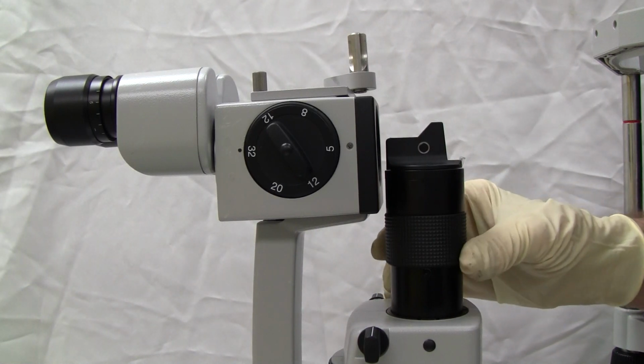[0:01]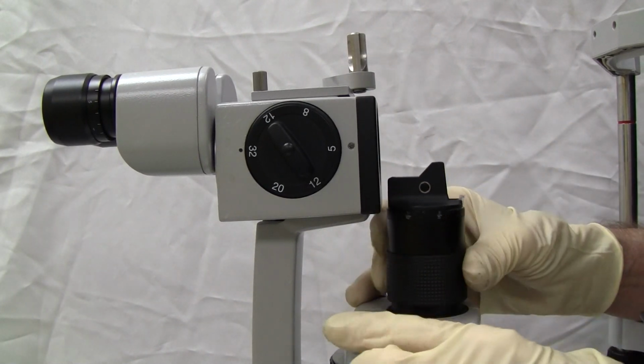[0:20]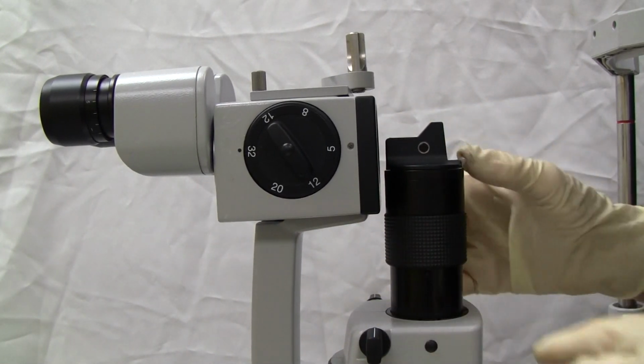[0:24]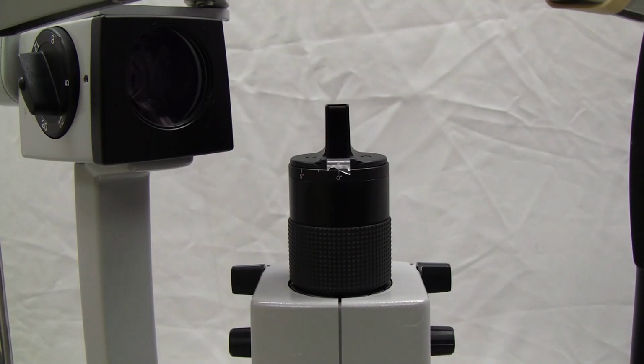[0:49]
On this Zeiss SL-120 or 130 or 160, you have a tiltable prism head that stays in position even though you're moving the prism head out of the way. And on the front of the prism assembly there is a diffuser that can be flipped into place, up or down, to diffuse the light. And sometimes these diffusers break and they need to be replaced.
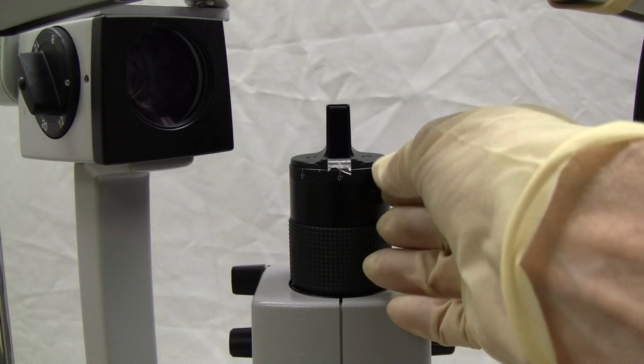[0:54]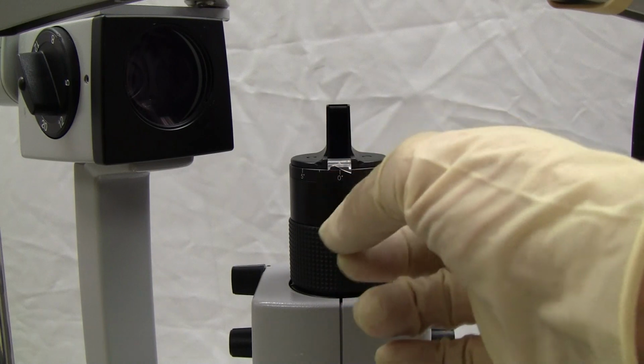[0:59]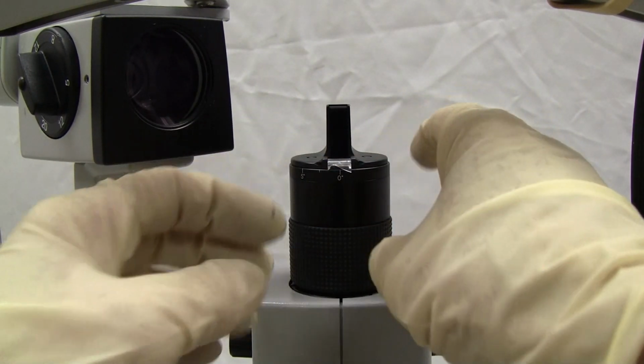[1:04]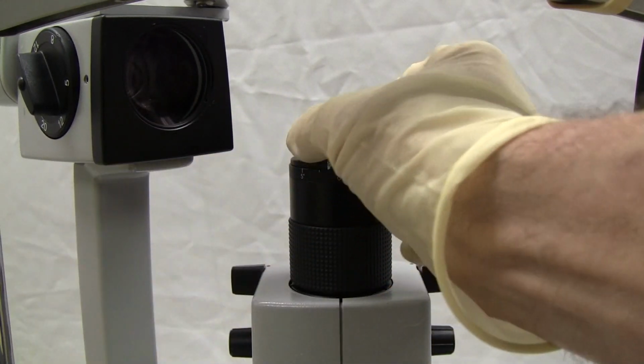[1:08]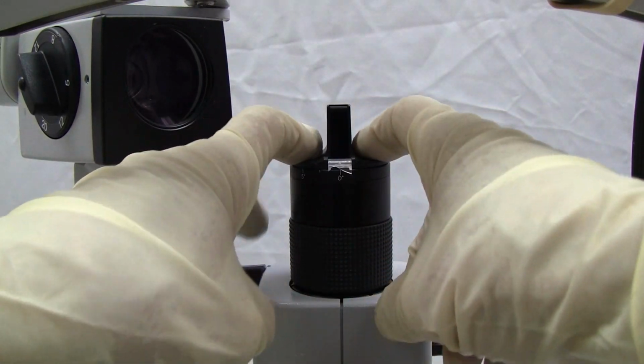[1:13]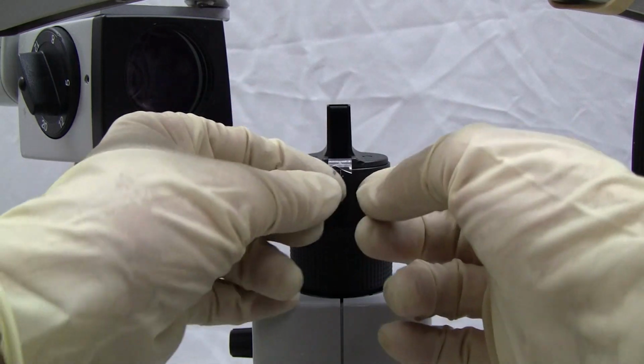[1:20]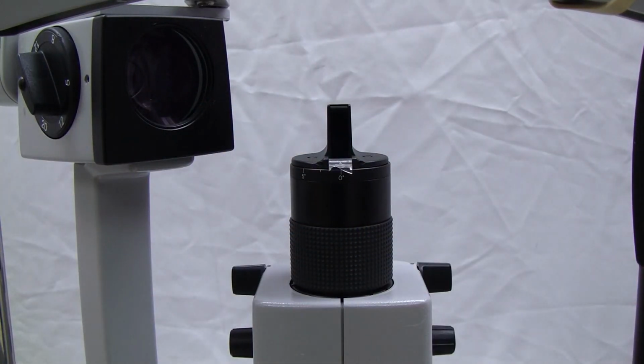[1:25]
Now, if possible, it's probably better to leave it in place while you're replacing the diffuser, because when you loosen these screws and remove the whole assembly, you're going to have to readjust it. So if you don't want to have to readjust your alignment and everything of the light, you can do it in place. Or if that's not a problem, go ahead and take it off.
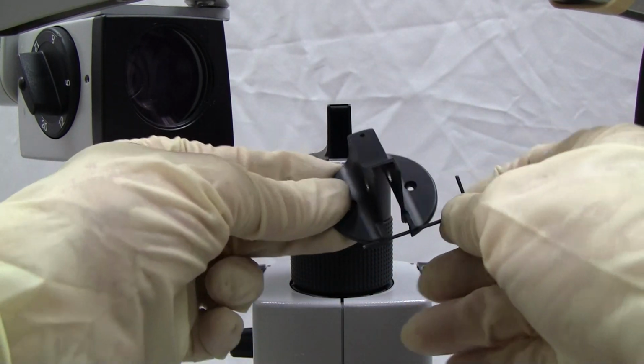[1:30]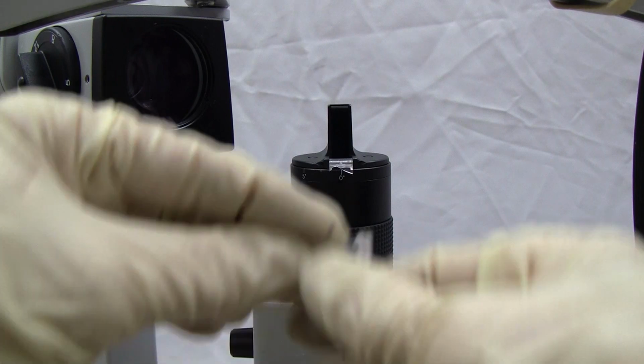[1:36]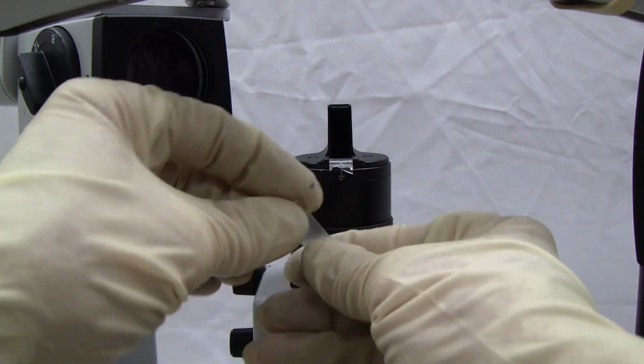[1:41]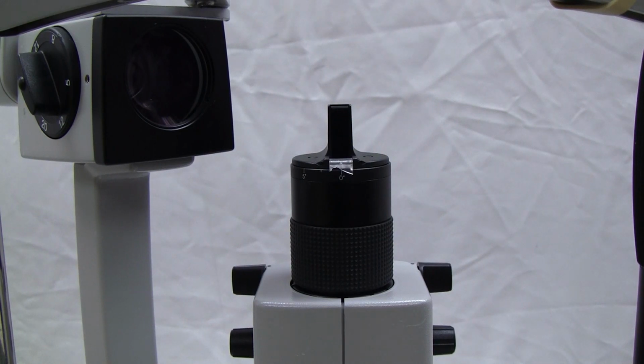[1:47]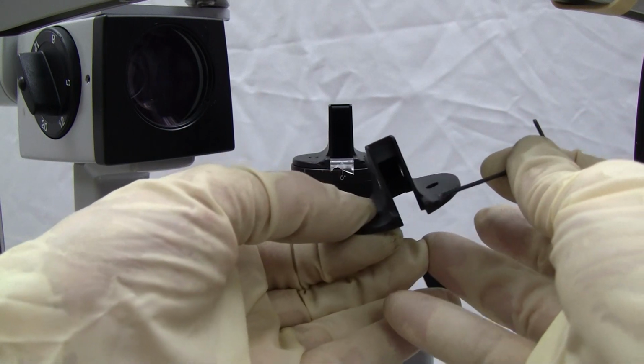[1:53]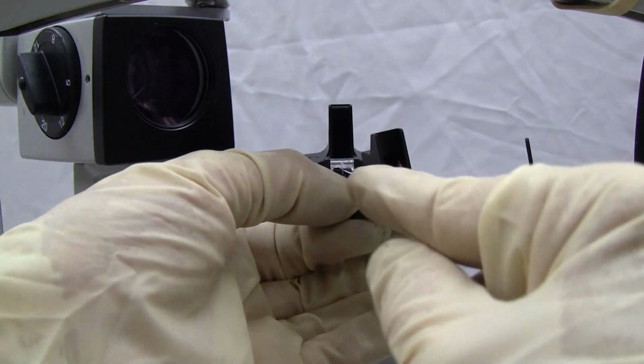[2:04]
But what we're going to do is push the pin through. It's held on by a pin that goes in the bottom, and it pivots on a pin. And all we're going to do is get something thin and push the pin out of the way so that we can replace it, and then we can push our pin back.
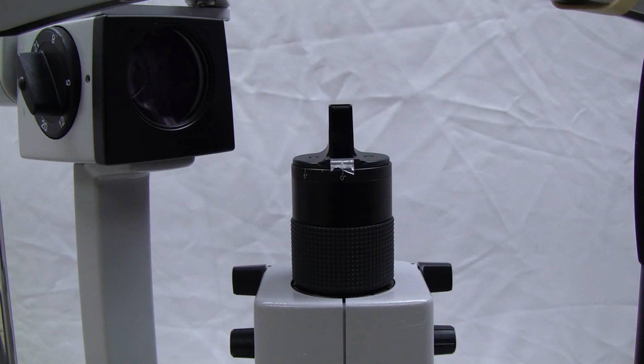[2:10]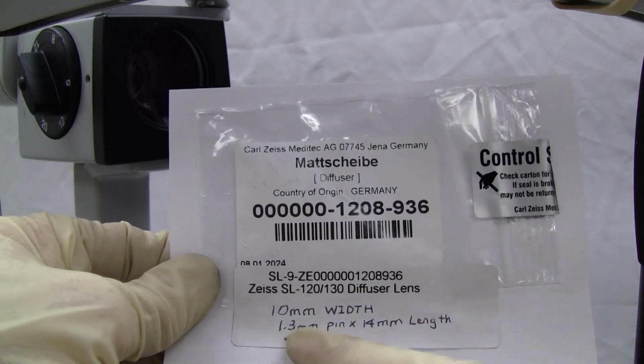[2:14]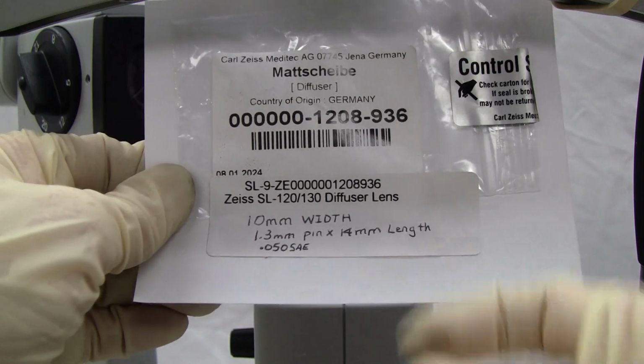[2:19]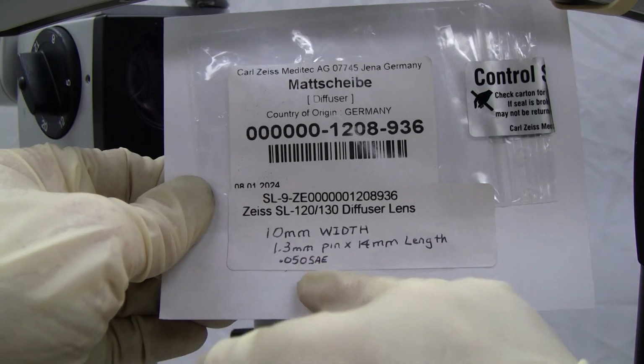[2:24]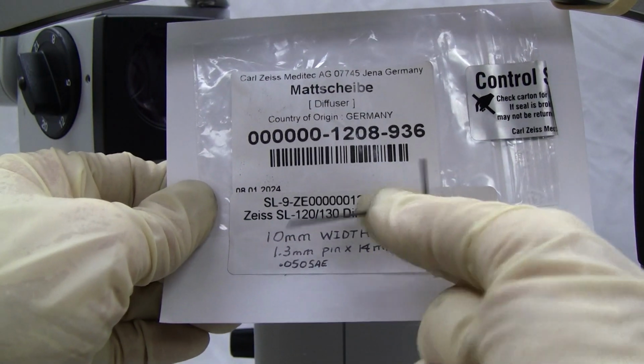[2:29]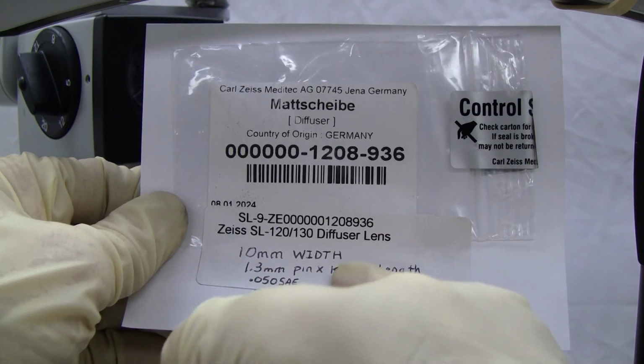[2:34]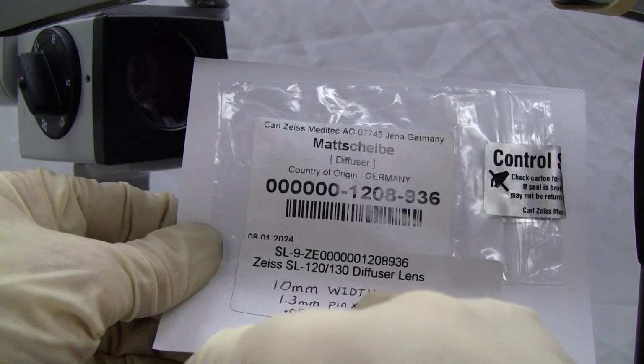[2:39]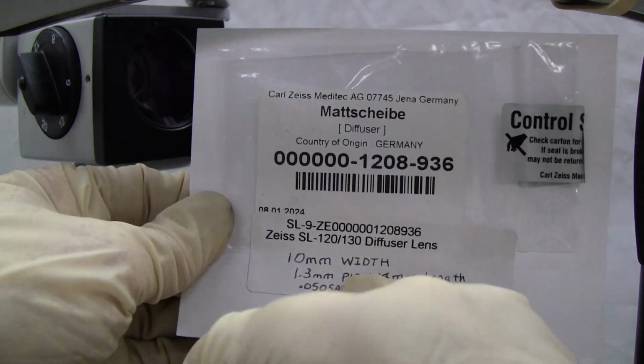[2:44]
And this small hole is about a 1.3 millimeter. So if you had a small Allen wrench, it's either 1.3 or 0.050, then you could slide it in there. And if you didn't have the pin, it's about 14 millimeters in length. And the width of the diffuser is 10 millimeters.
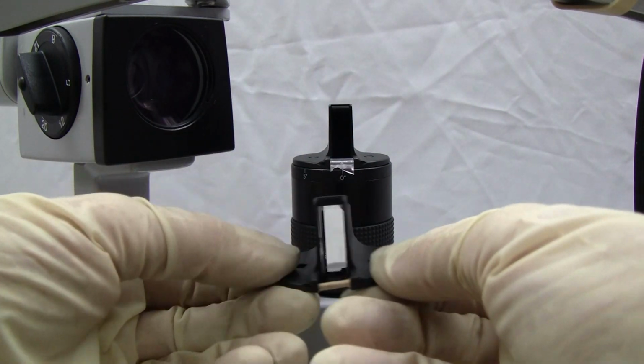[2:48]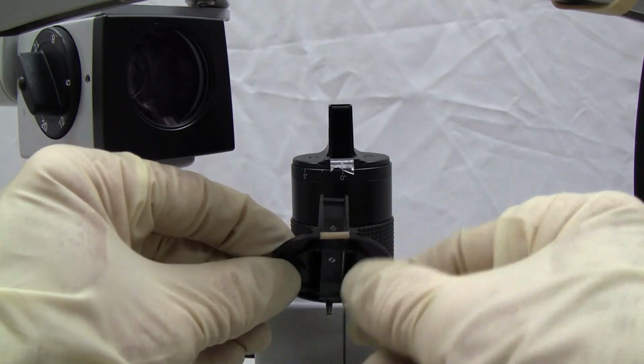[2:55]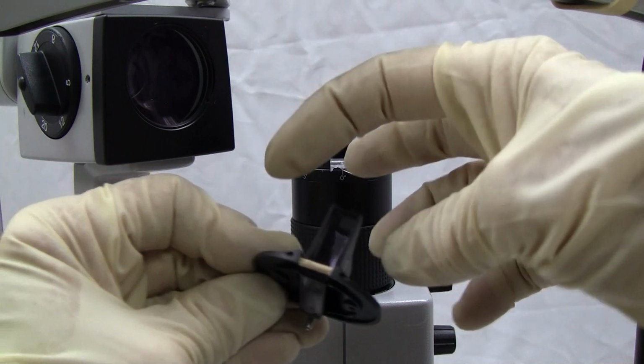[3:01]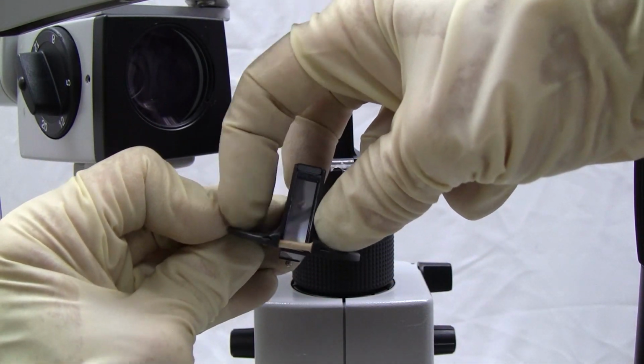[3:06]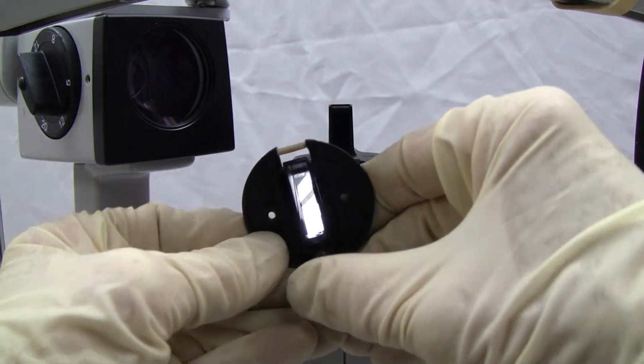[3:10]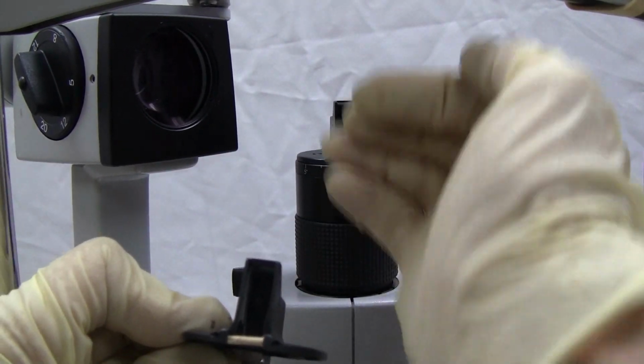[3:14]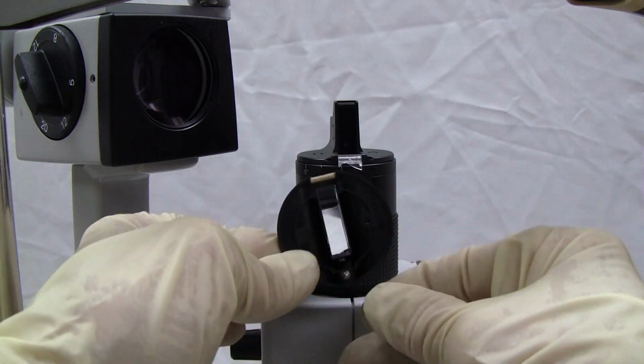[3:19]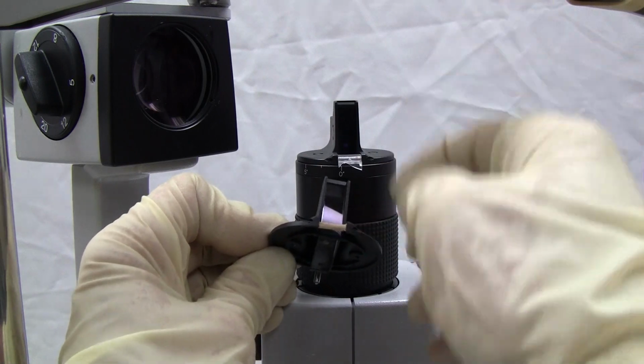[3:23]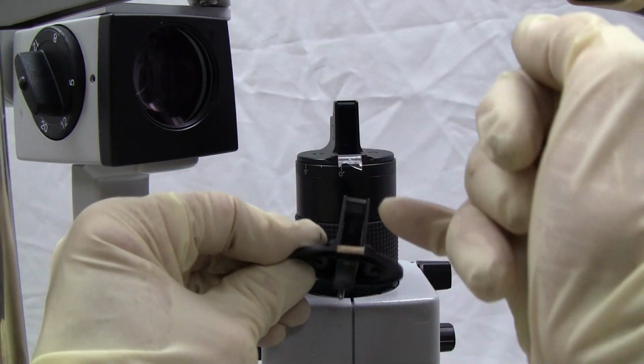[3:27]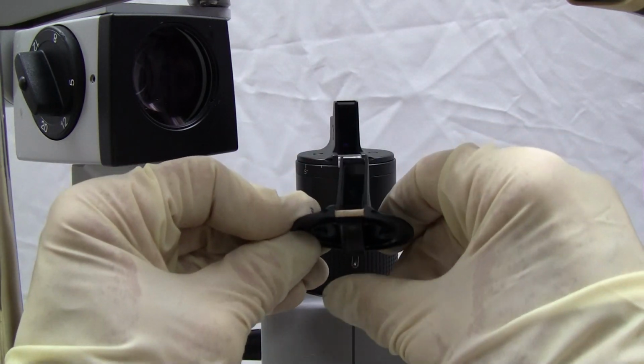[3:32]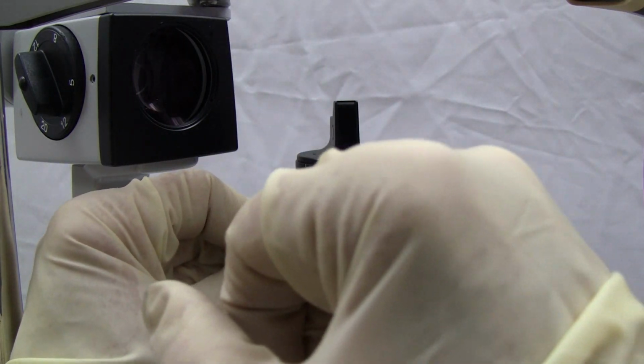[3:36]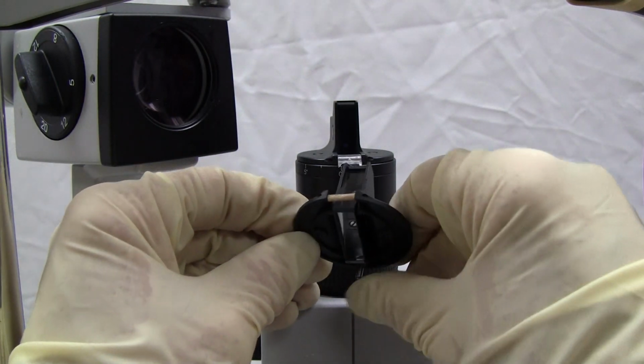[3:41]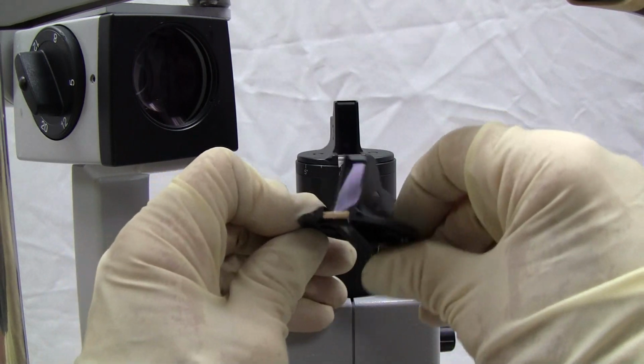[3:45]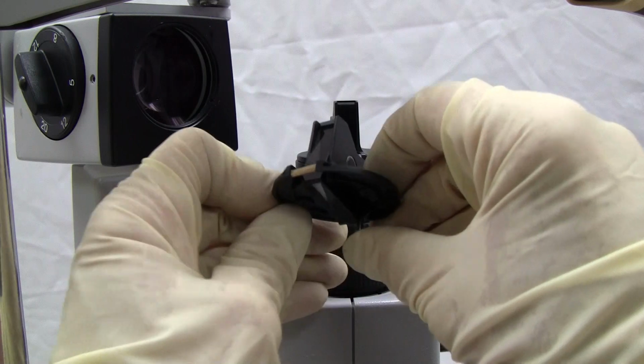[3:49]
And sometimes it's gone completely, the pin, and it's still important to maintain that spacing, because if not, it's going to put pressure on your prism that moves when you're turning it up and down. It's pivoting at the same angle, and so this space is important so that it's not pushing your cover against the prism and holding it from moving correctly. So that 10 millimeter space needs to be maintained so that your prism will continue to work correctly.
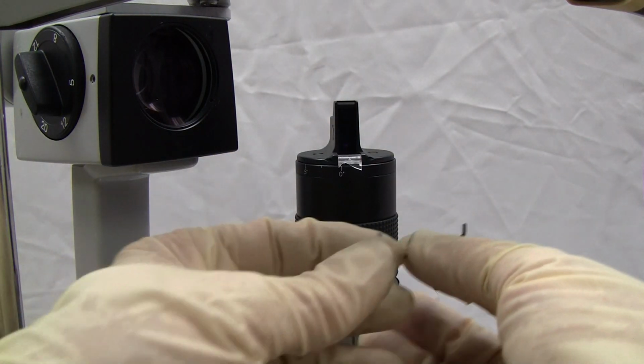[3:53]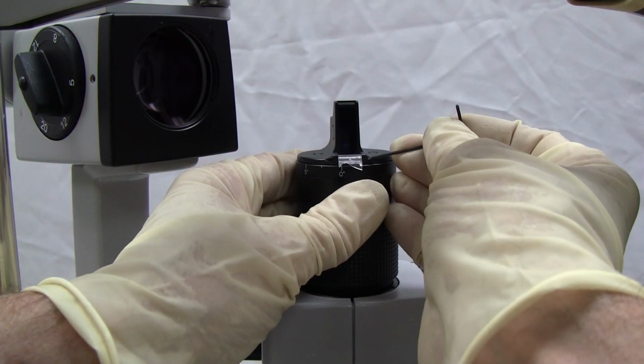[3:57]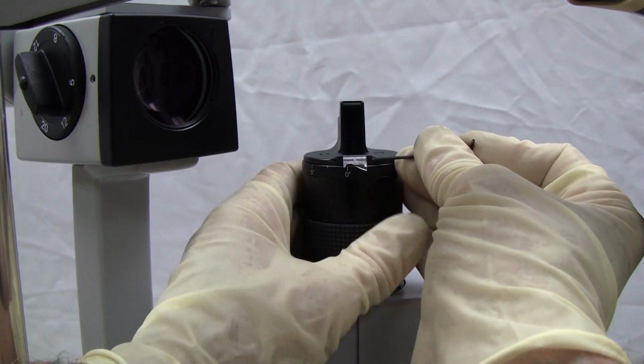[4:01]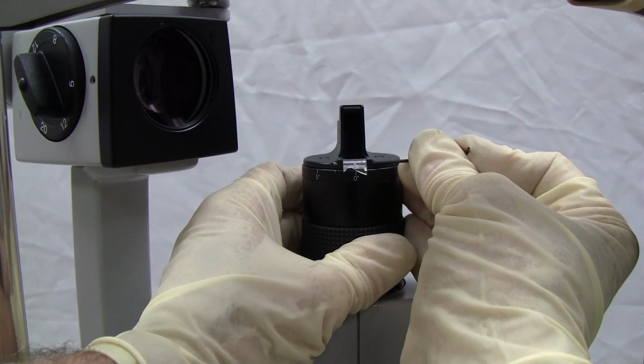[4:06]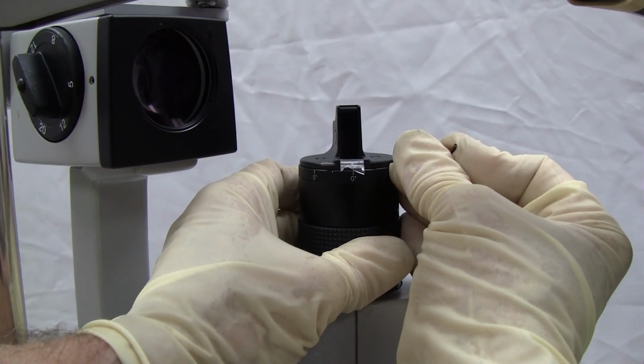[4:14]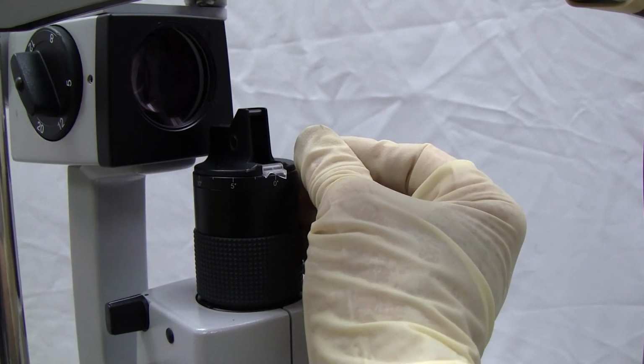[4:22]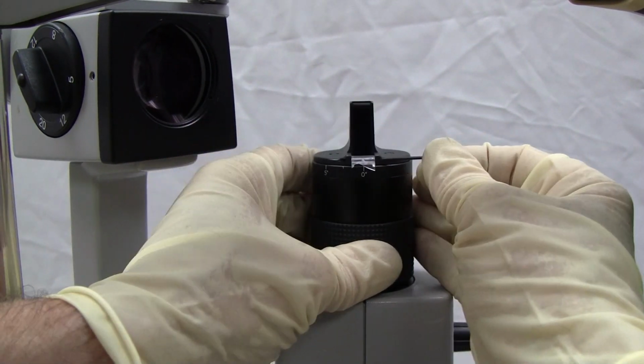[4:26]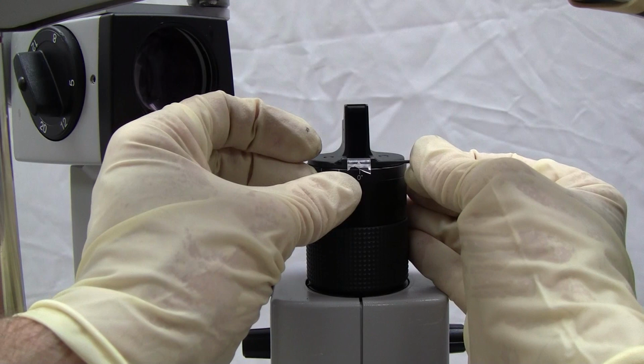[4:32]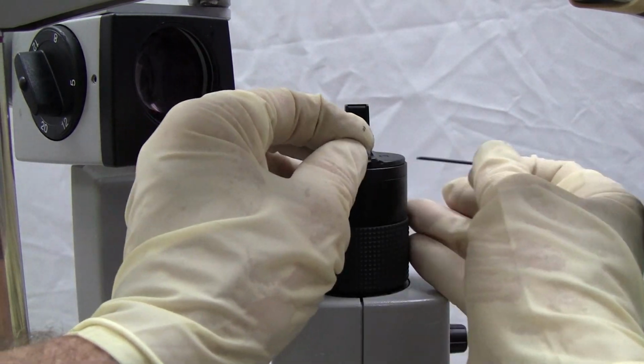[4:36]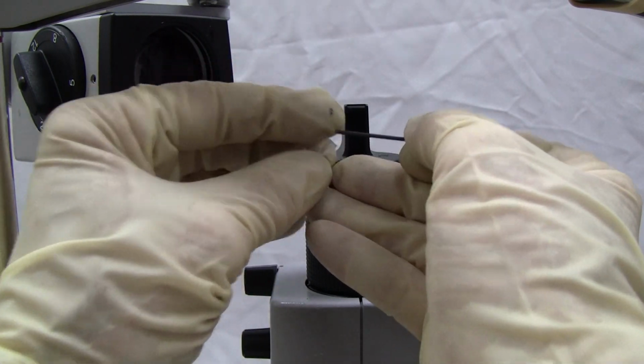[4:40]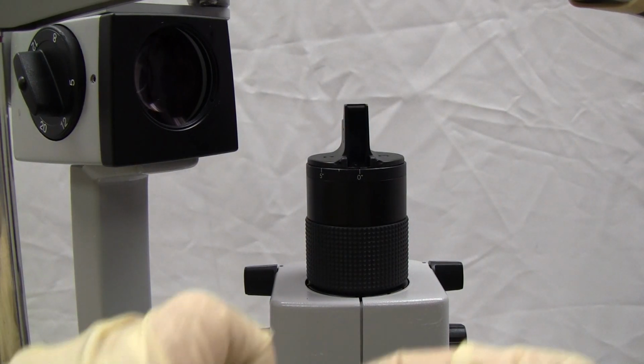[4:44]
So with our little Allen wrench, we're going to try to push it through one way or the other. You can see it coming out on this side. Okay, well, I happen to have pushed it all the way out, but if you could just push it out enough so that it stays in there, that might be better for you. And we're just going to take out the old piece, if it's still there. And then here's our pin.
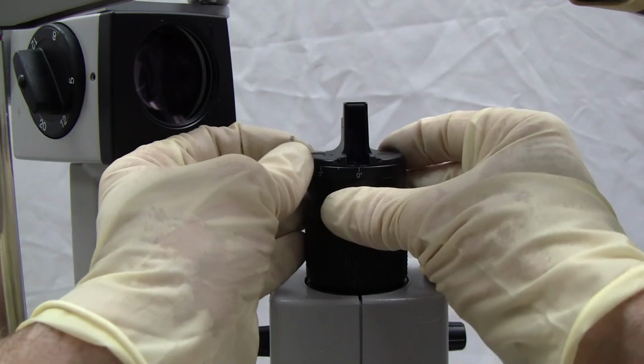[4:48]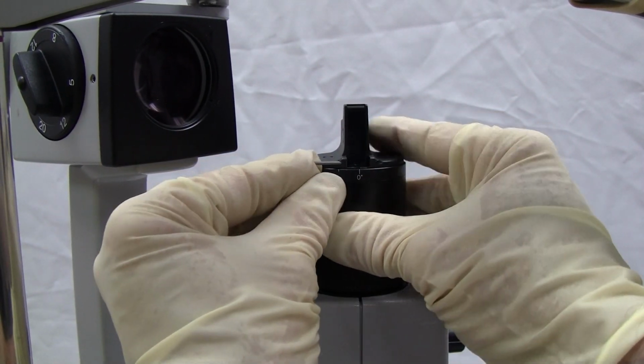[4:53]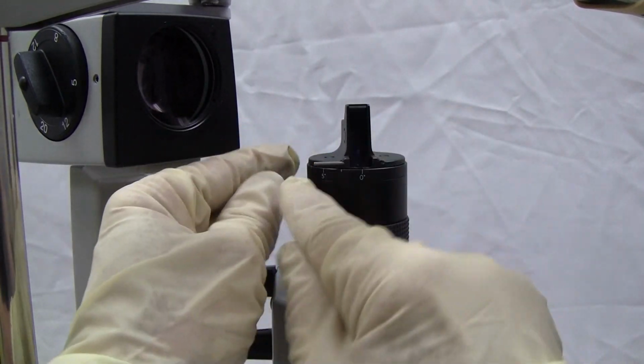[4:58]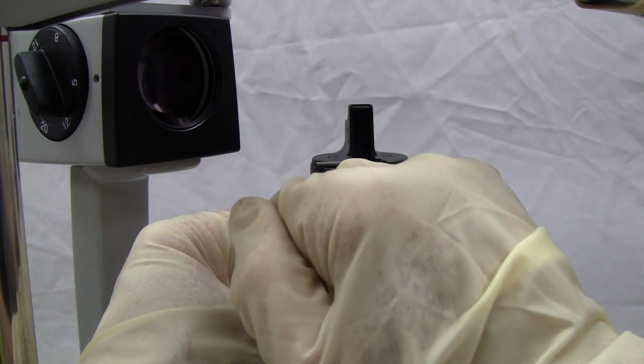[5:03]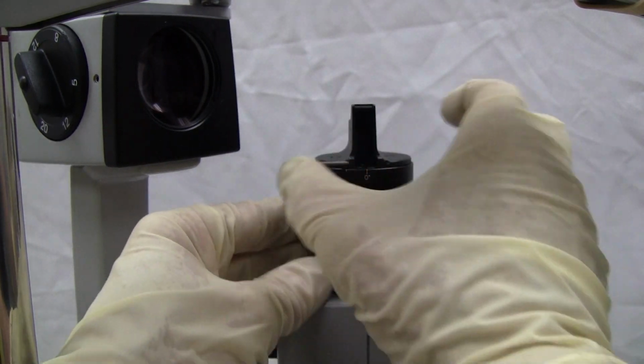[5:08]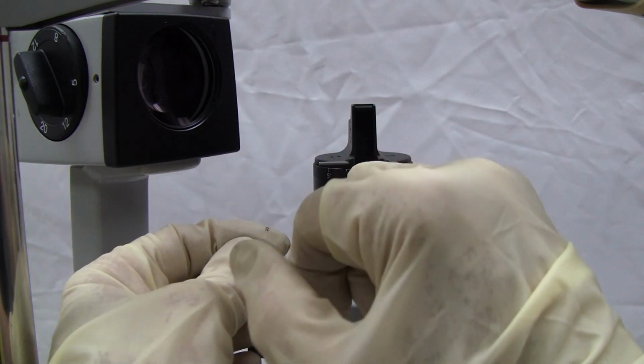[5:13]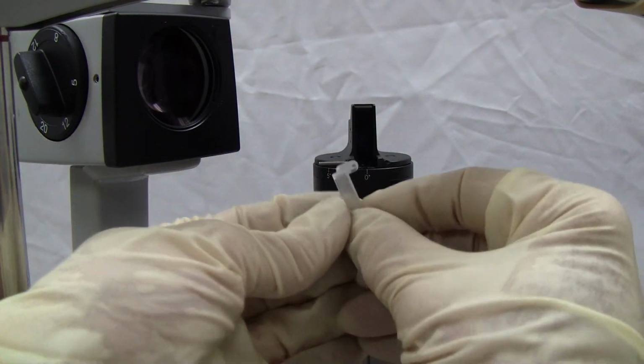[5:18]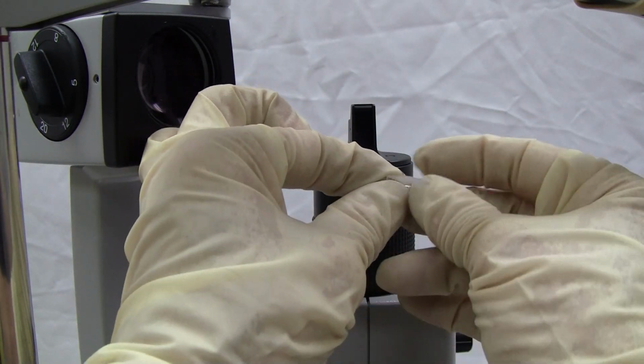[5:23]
We're going to push it back in a little bit to get it started. And be careful, the edges can break out and you can lose your pin supports. So be careful when you're pushing that you don't rock it back and forth and break this thin plastic. And when we put it in, we're going to put it in like this so that it tilts up.
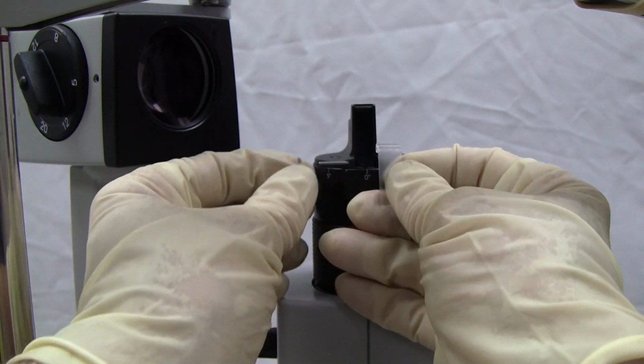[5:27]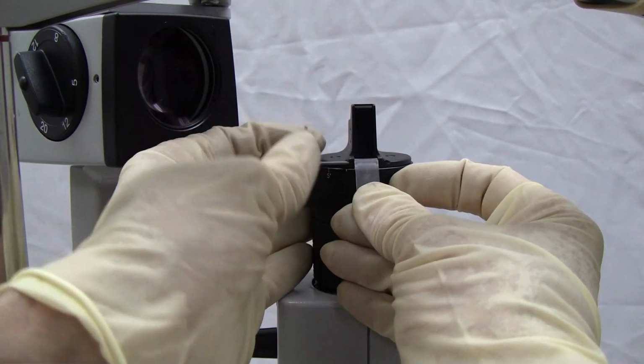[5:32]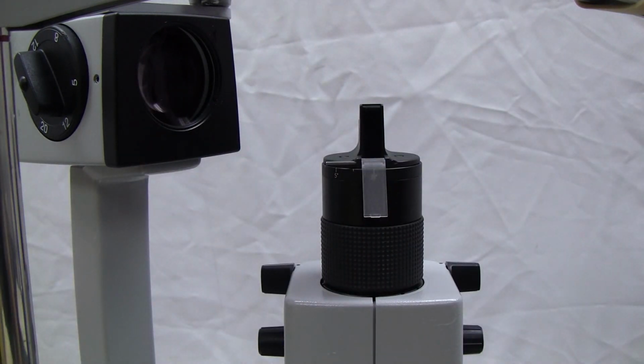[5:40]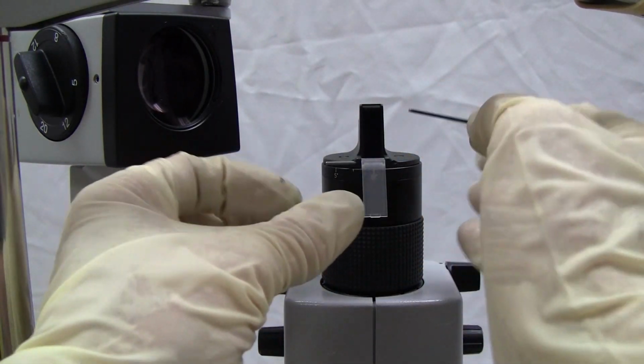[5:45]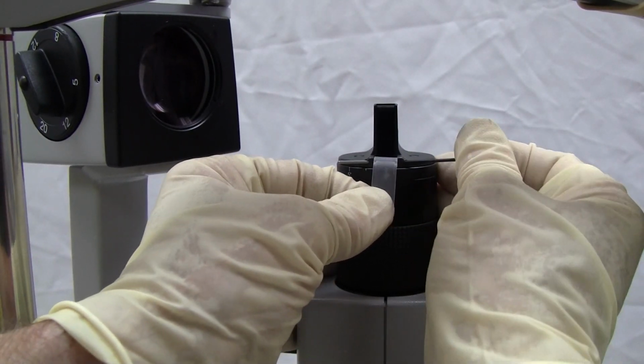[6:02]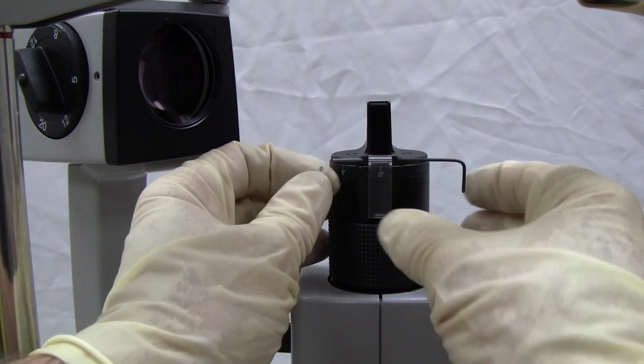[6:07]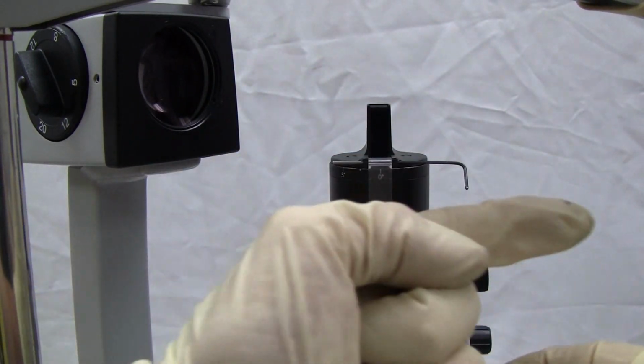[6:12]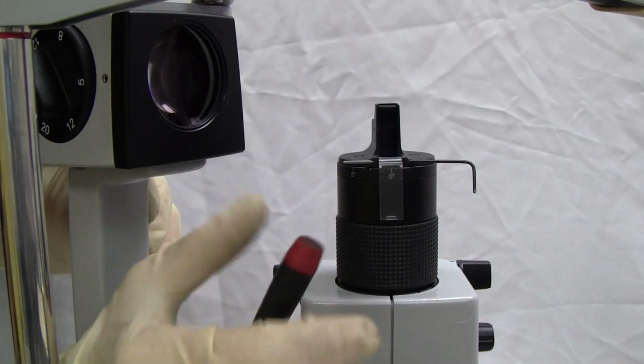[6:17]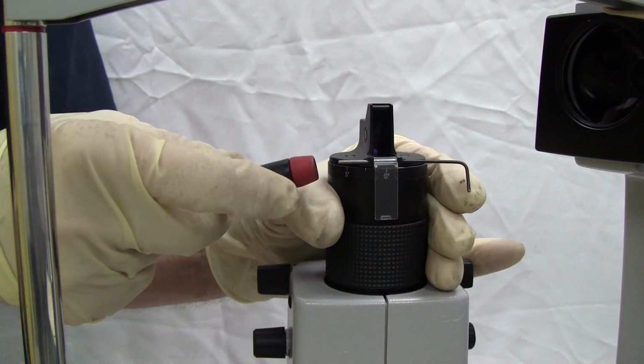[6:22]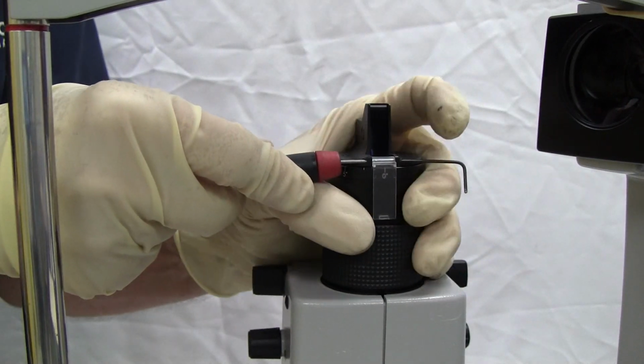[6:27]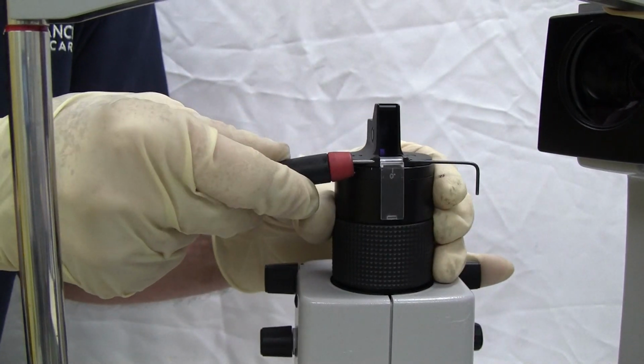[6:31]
We're going to put it back in place and push our pin. You might need to get something to push against it. And what we're going to do is hold it in place, taking our Allen wrench and putting it in on the other side so we can hold it in place while we're pushing our pin. It's going to stay straight in. So I know I've got the alignment right. Now it's just a matter of starting this end, and then I'm going to push that out. Once it starts going, it's going to be pushing that out and keeping it right in line.
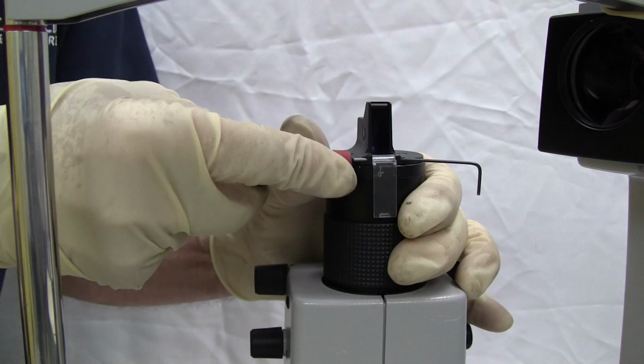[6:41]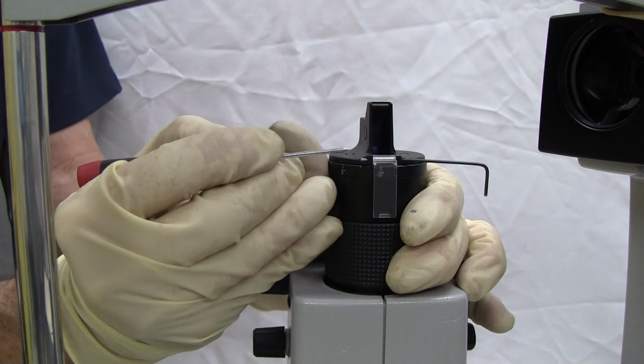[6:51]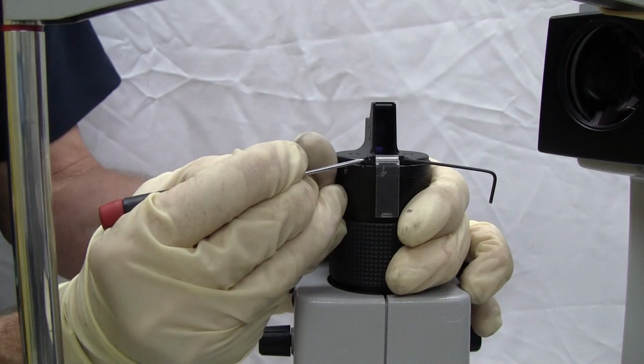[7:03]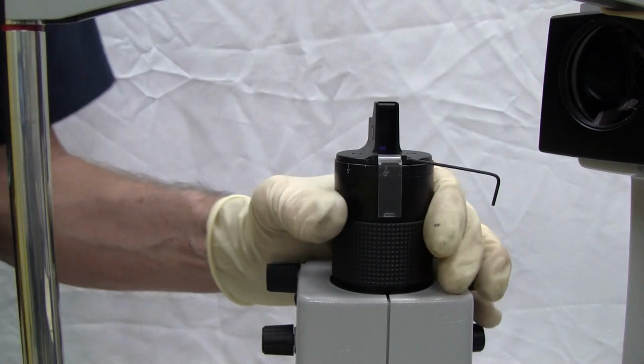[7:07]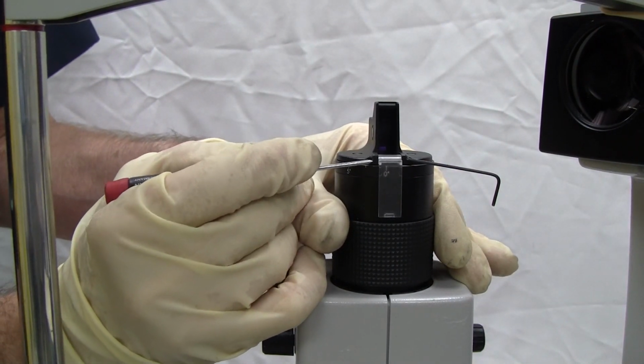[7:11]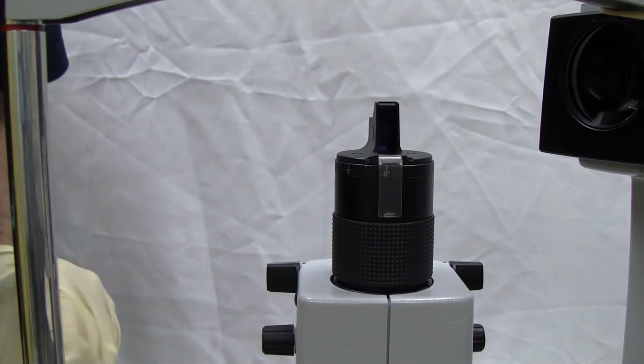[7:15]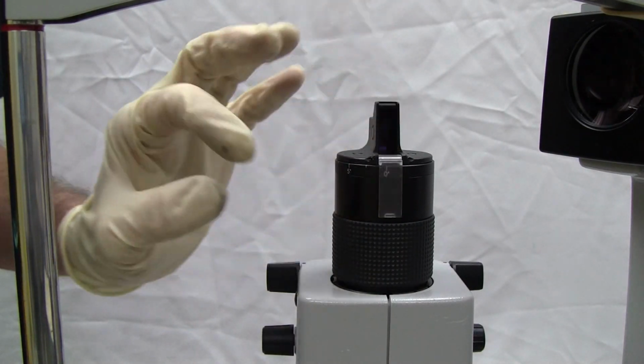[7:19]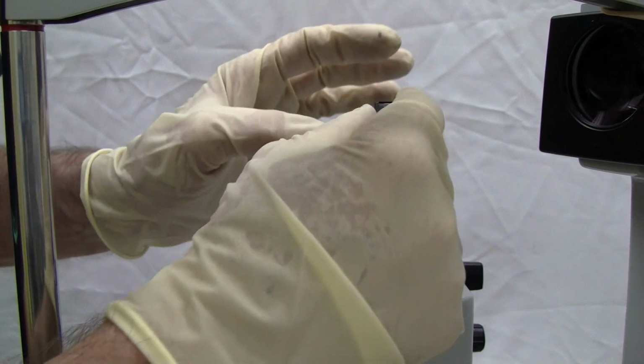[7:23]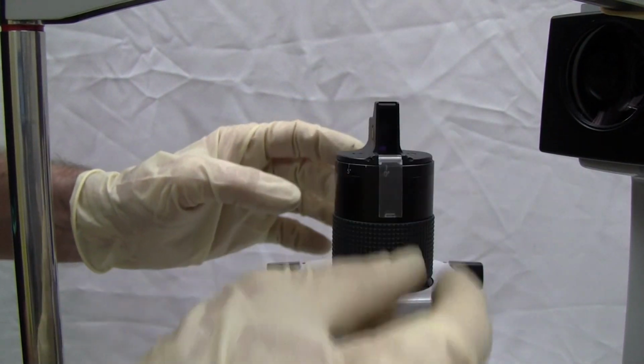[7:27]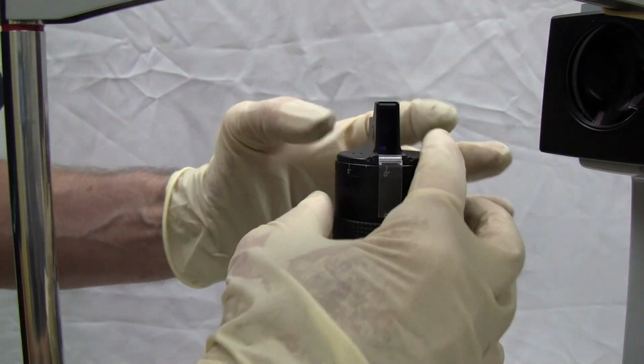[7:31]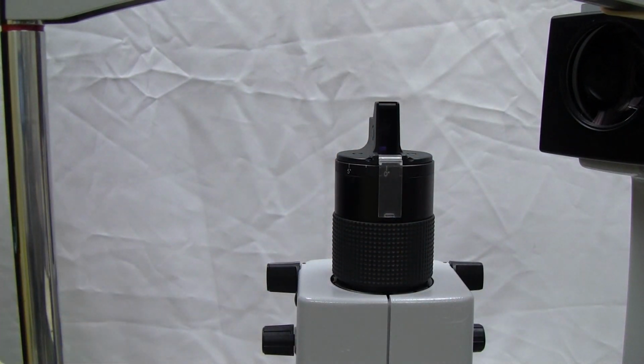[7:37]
I've got a little pointer. I'm going to push it until it goes past this side. When the pin disappears from view, that's probably enough. And then check operation of the diffuser, make sure it's flipping well. So we didn't have to take the screws out of here and mess with our alignment. Of course, we're going to check.
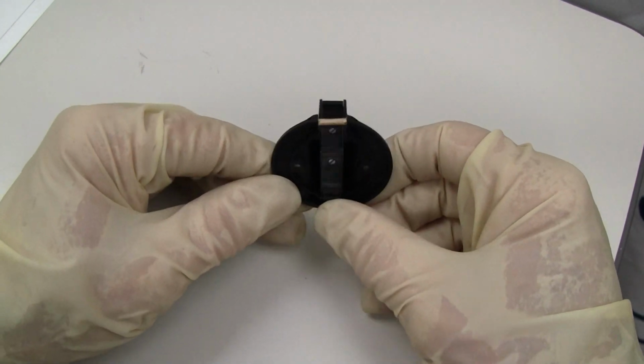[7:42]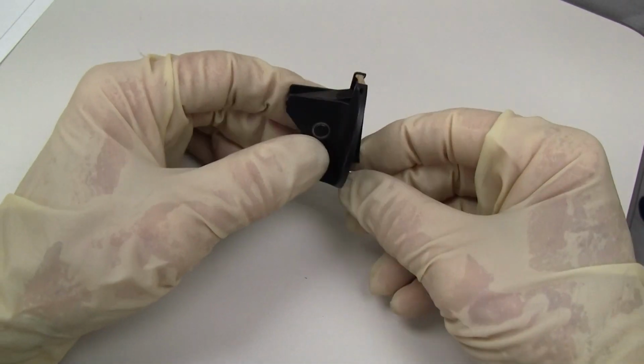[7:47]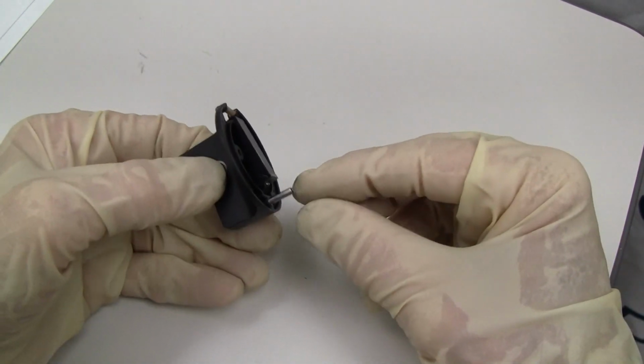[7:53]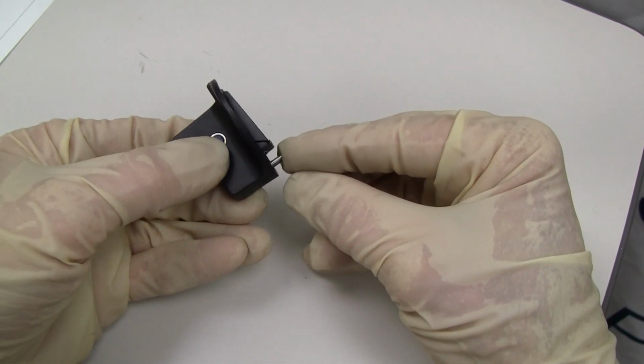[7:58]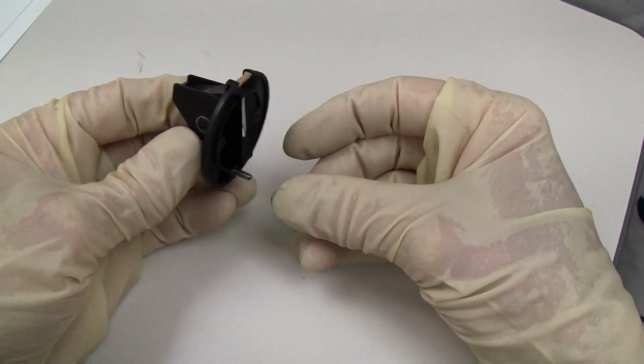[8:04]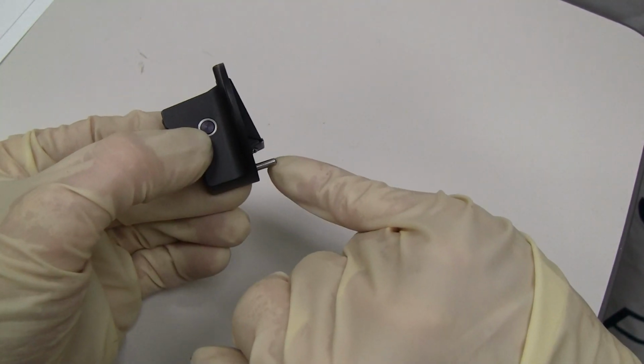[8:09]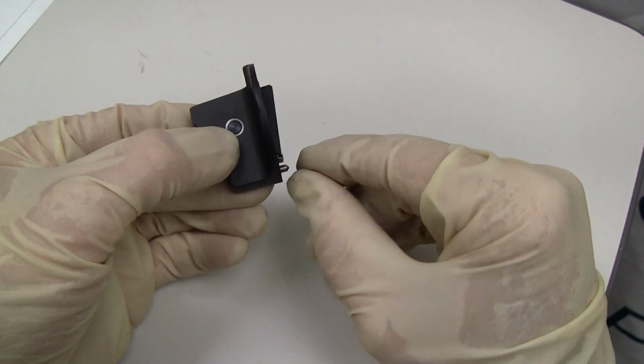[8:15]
But if you had to service the prism tilting assembly, you would have to take the two screws off, and it rests on this pin. This pin is pushing the whole assembly to tilt, and as you're turning your whole assembly down, the plate under here goes up and down, and so it moves this pin one way or the other.
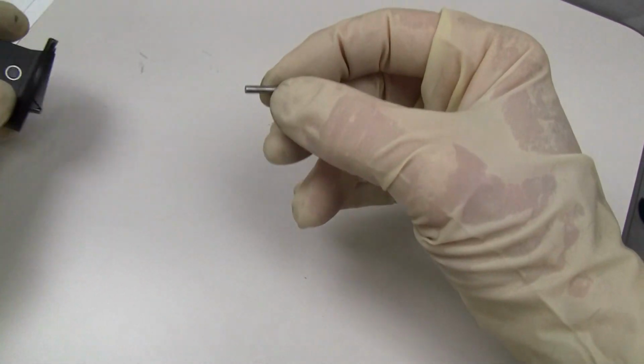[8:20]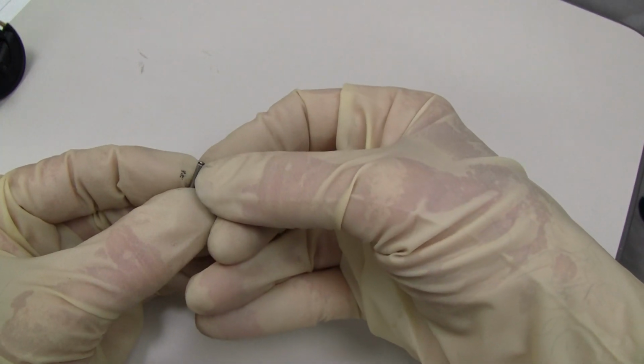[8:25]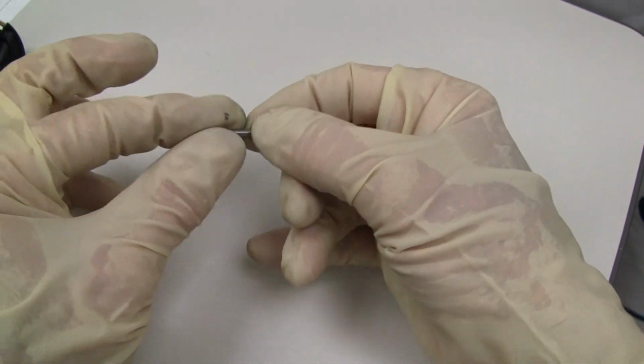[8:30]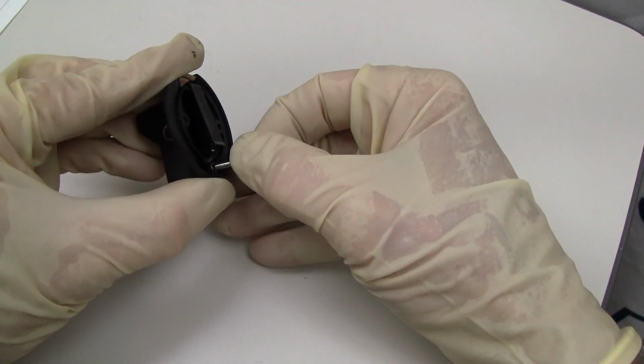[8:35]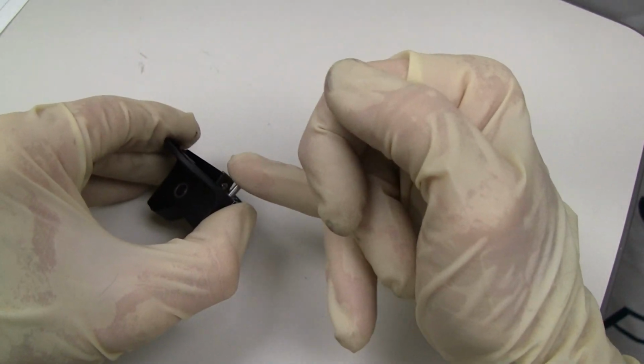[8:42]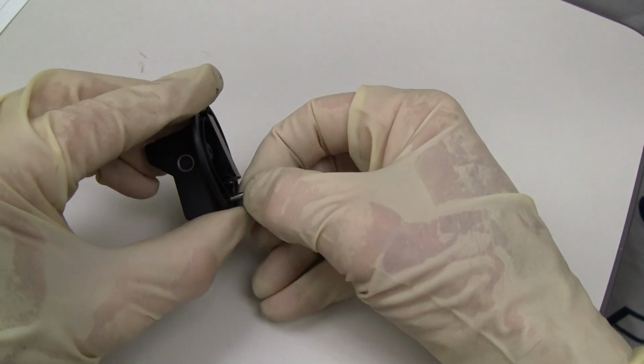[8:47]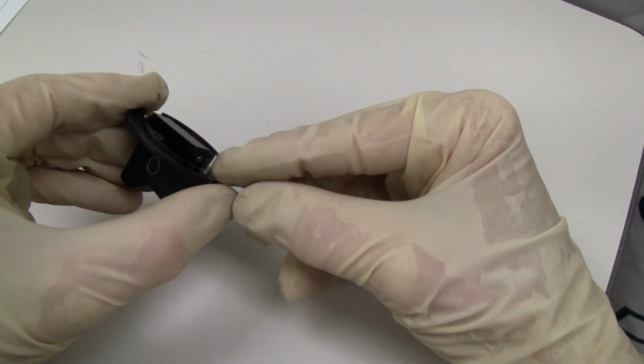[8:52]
So this pin is removable, and it's got more of a round tip on it and a flat. And the round tip is going to go to the outside because it's going to be against a little brass plate, and so it's going to be moving around as that plate is moving around as you're turning it. So you need that little round area.
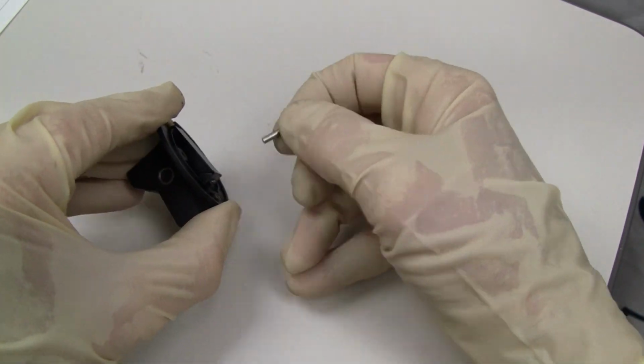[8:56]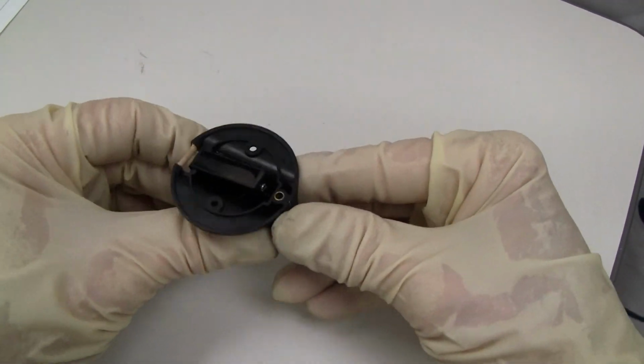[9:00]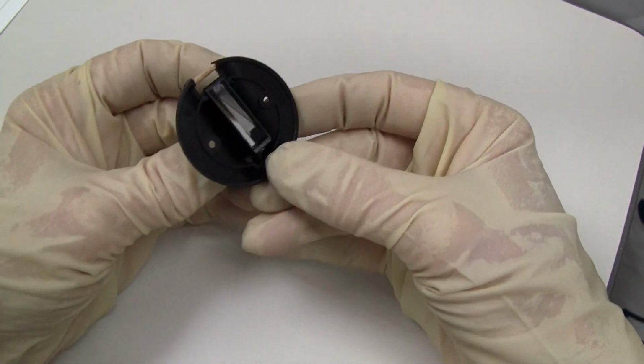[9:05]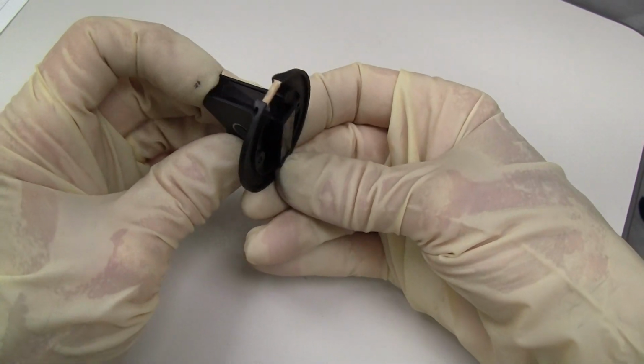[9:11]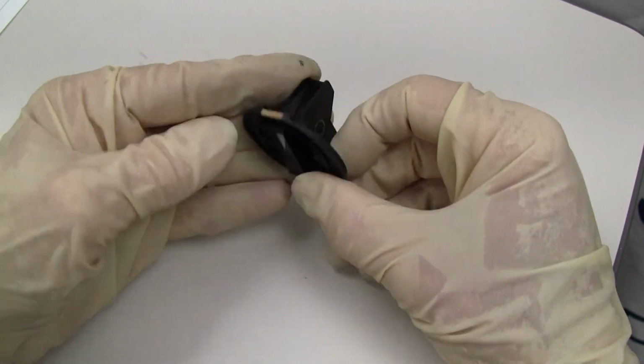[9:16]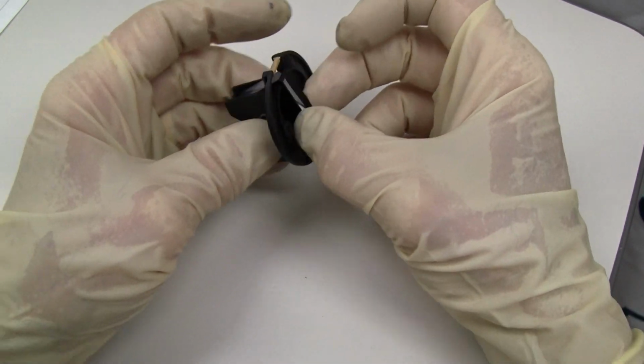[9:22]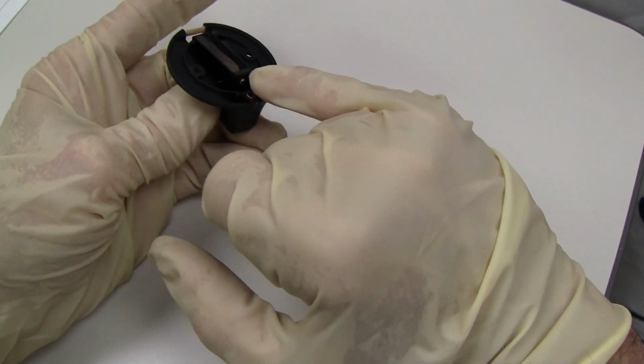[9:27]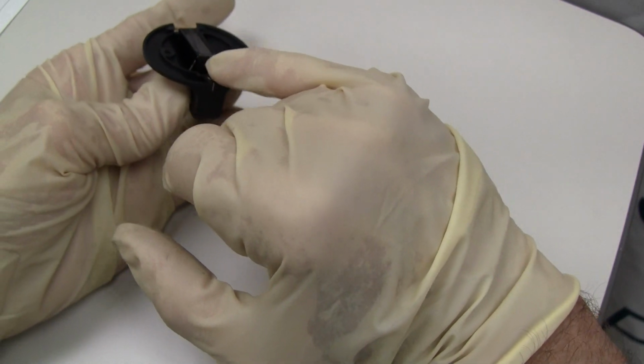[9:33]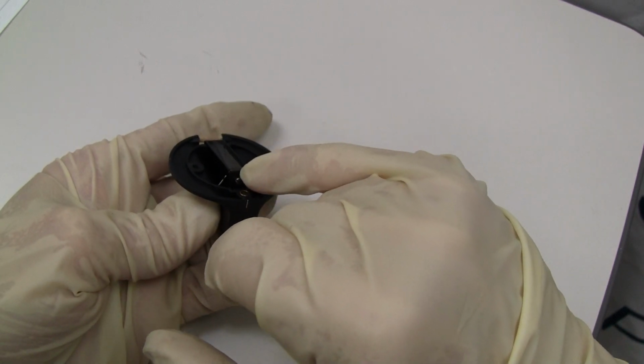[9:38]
And this prism is held in two places, at the bottom and the top, and not in the front. So if your prism was out, then it would mean that something came loose. Or to take it off, there's a screw here that has a little plate, and that plate can go up and down to push down against the prism to hold it in place.
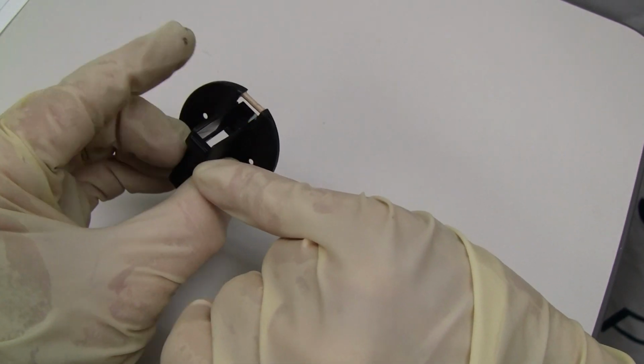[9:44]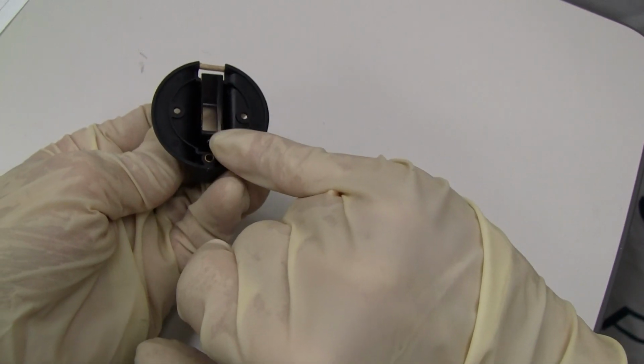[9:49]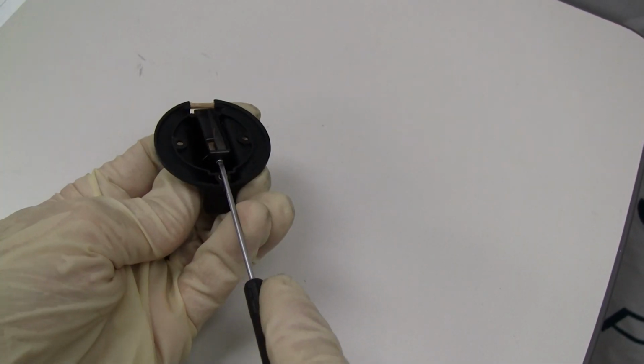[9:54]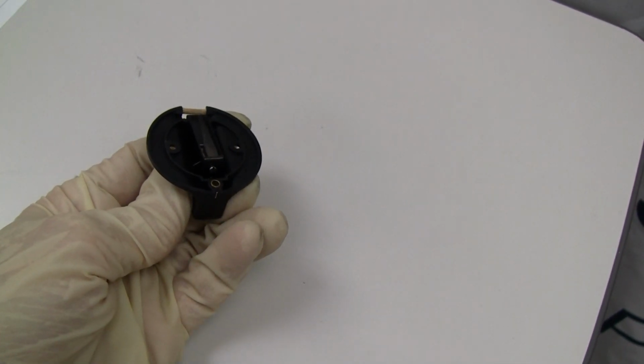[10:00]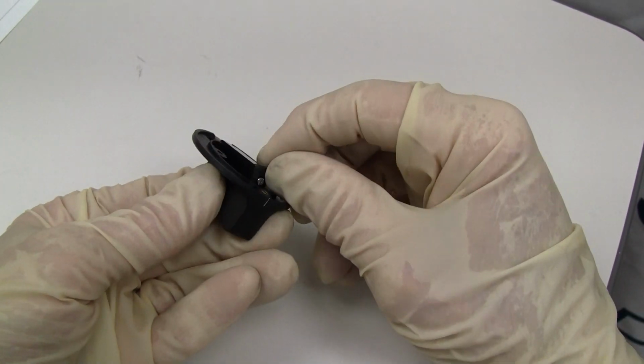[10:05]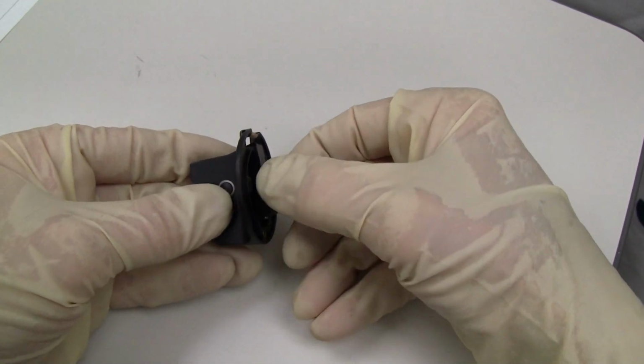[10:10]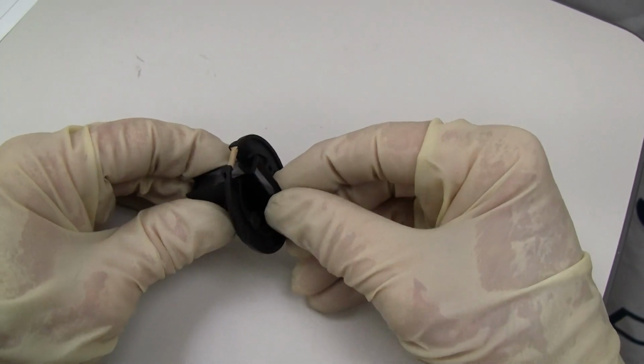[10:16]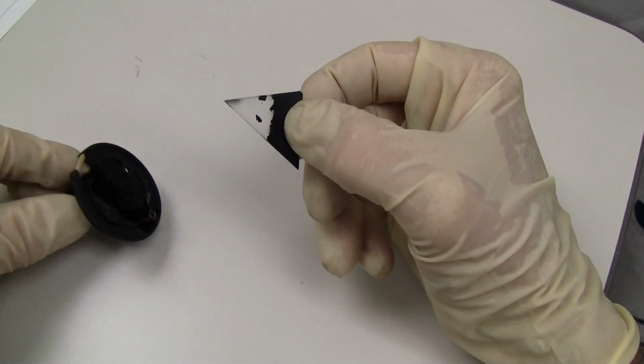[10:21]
This side is stationary on this back plate, but this side you can move it up and down. So if we loosen it a little bit, you can move that plate up or out. But it's just enough to release your prism. And then your prism comes out.
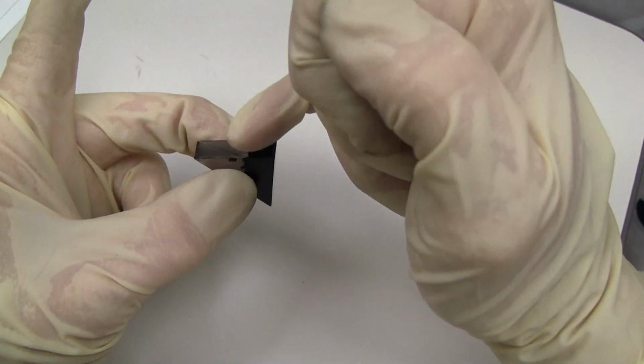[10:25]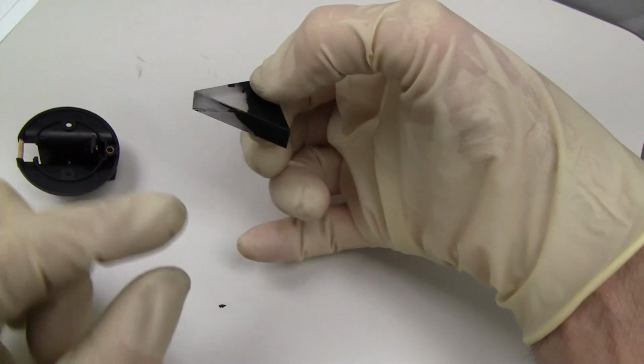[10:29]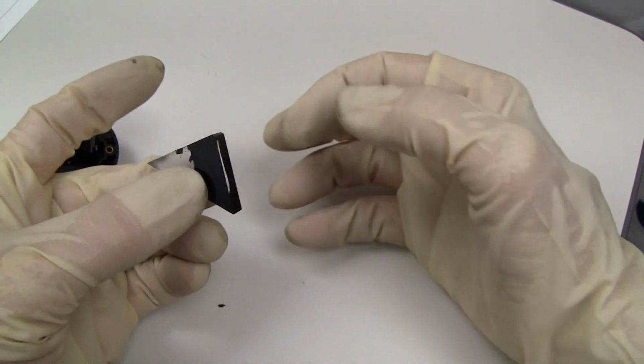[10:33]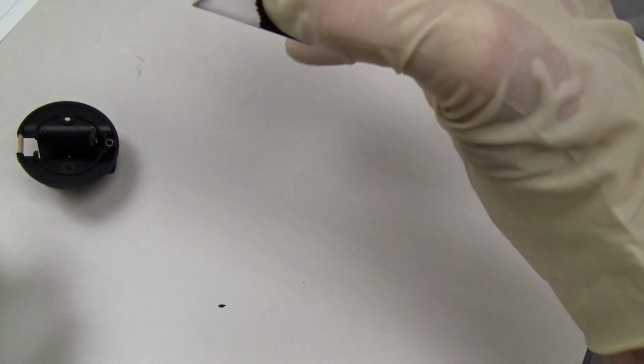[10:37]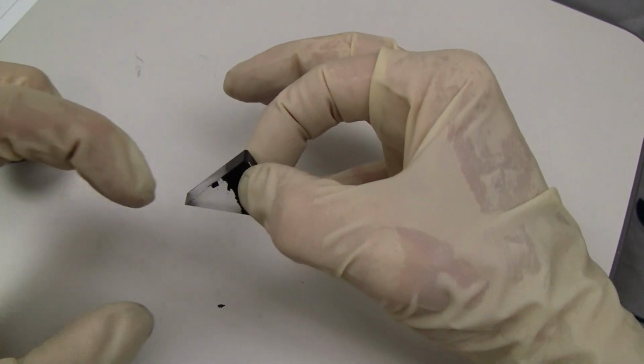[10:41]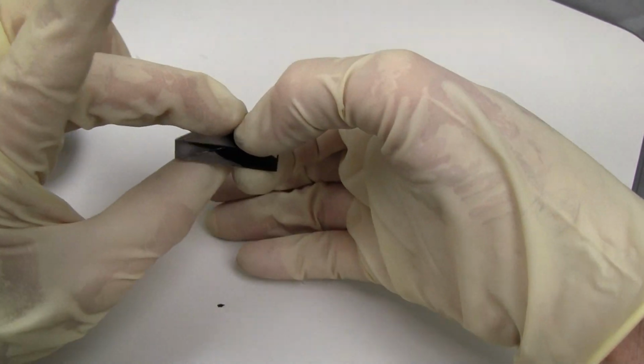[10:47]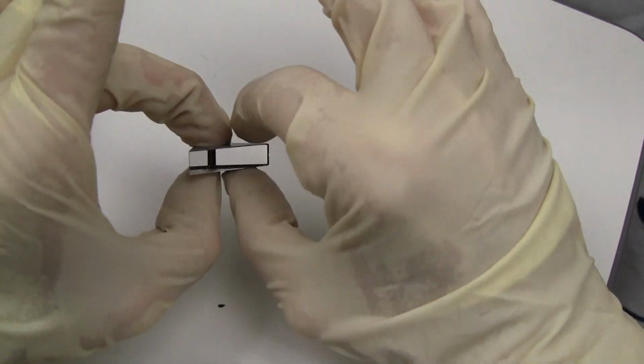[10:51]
So these are the sides on the outside, and then this is the side on the bottom. So the long side is going to be on the inside. And then these surfaces will be on the outside. So if you needed to clean your prism, you could do that.
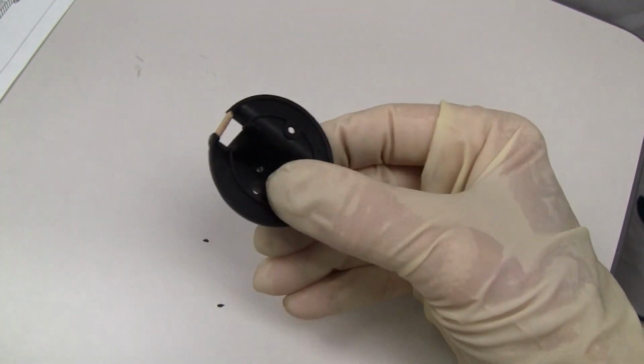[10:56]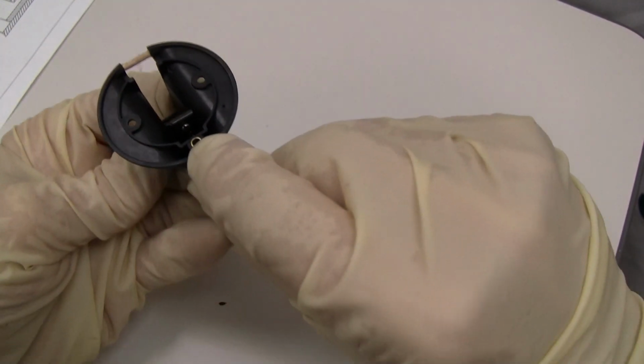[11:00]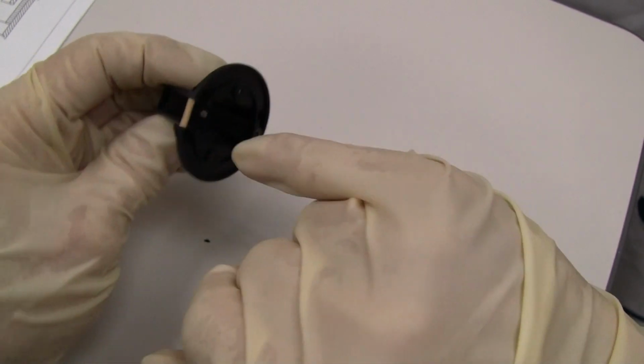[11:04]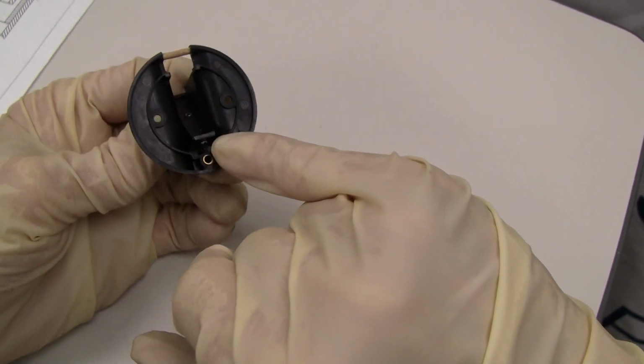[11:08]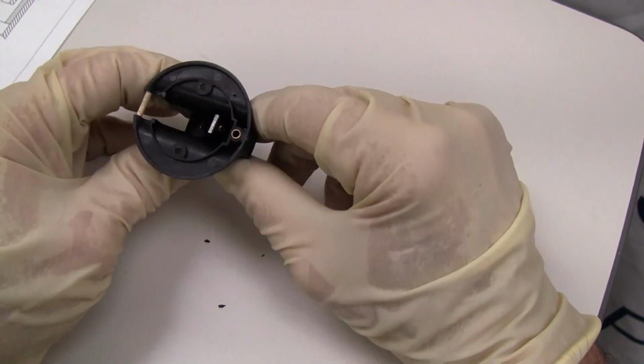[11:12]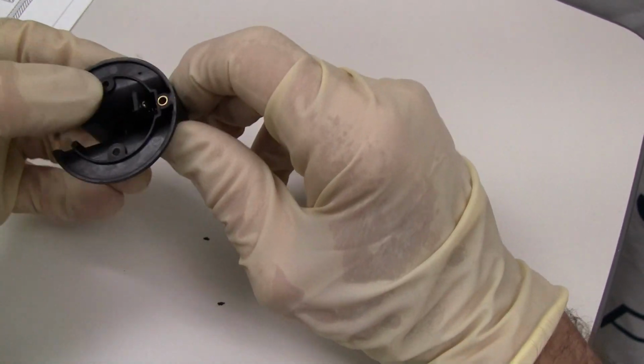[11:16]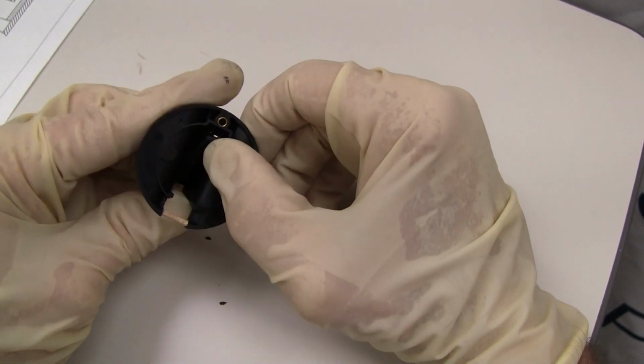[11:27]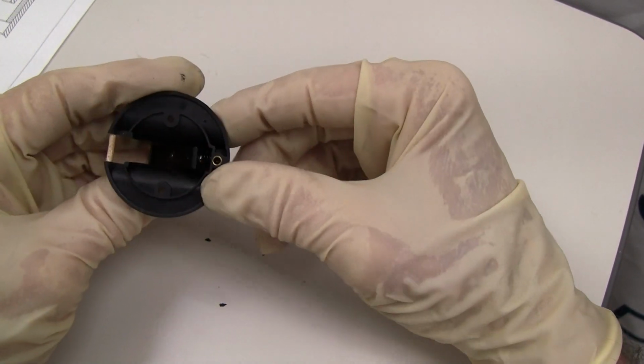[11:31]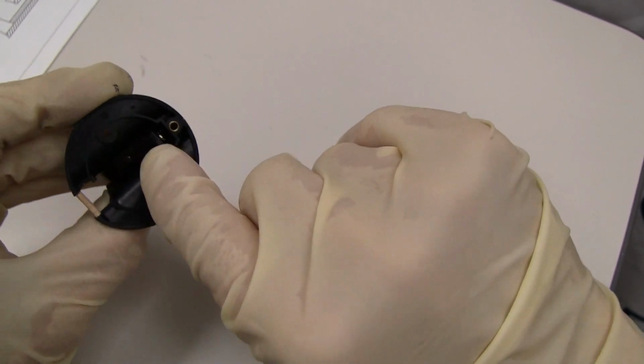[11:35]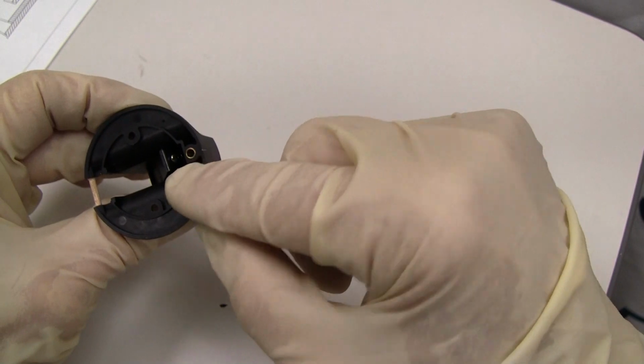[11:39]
And in here, you have a spring. A spring is in there. And another screw. And that screw is holding everything together. That spring is giving it the tension to push back into place. So sometimes that little spring might come out of its place and you're going to have to maneuver it to put it back in. It's got little tabs on there so that it's supposed to stay right in place.
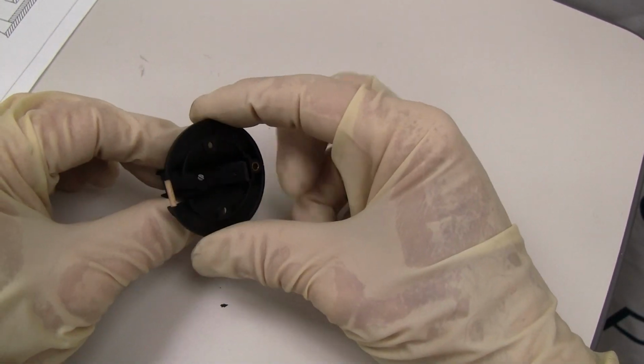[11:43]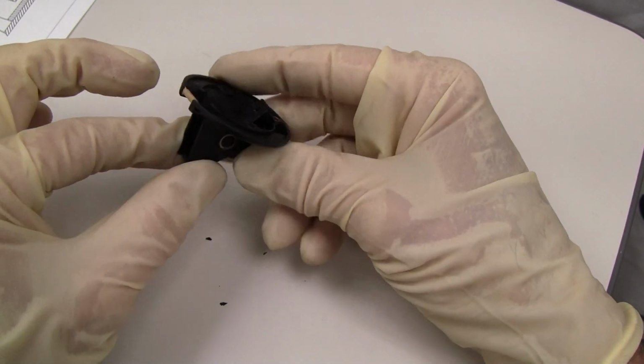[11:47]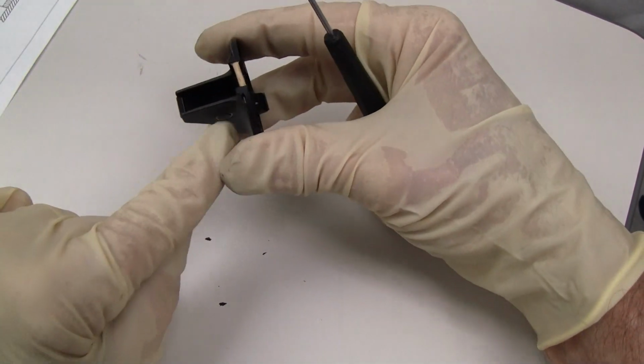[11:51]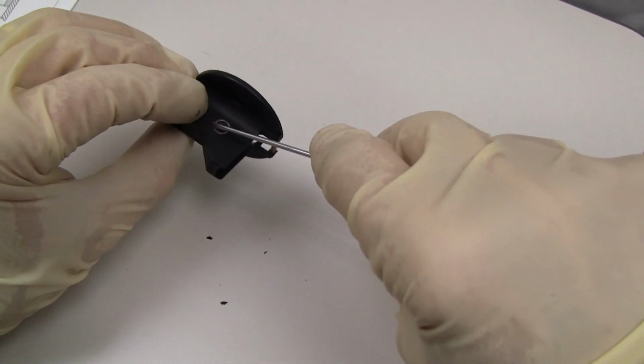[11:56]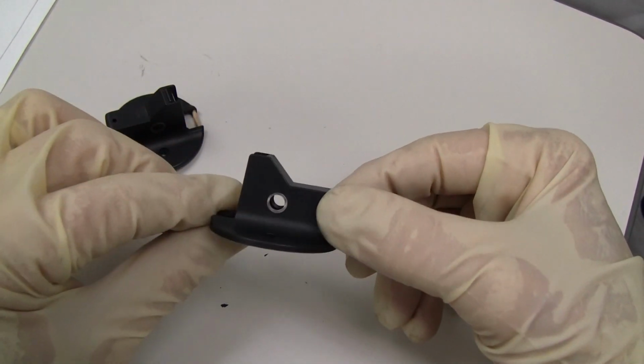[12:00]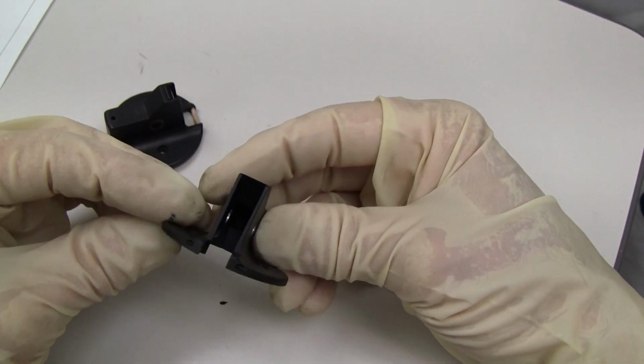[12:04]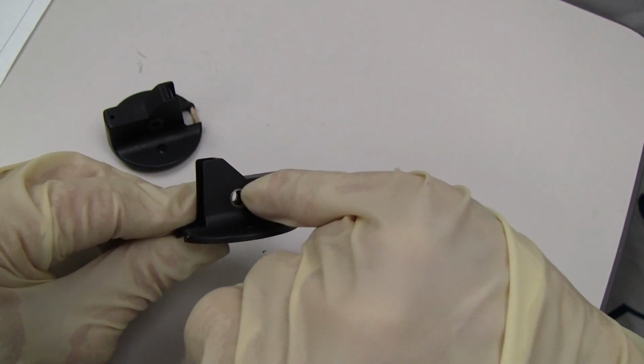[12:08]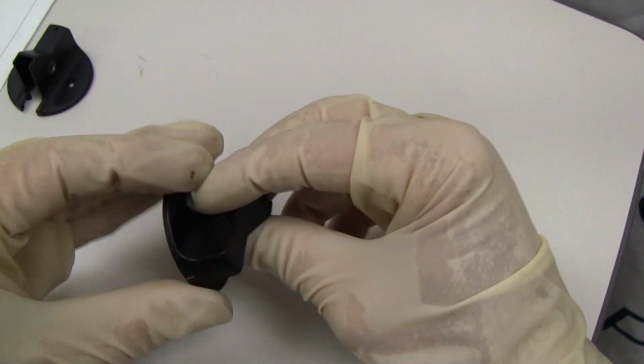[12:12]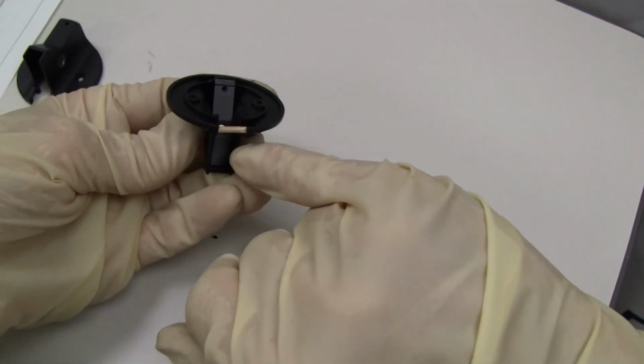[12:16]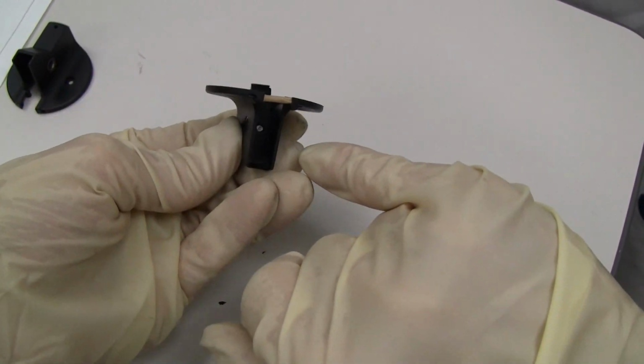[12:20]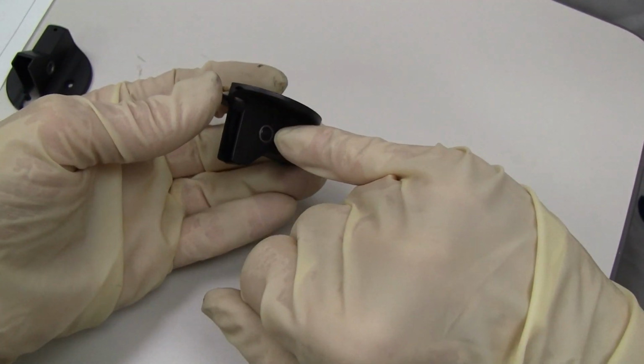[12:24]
But if you had to service that even deeper, everything is tilting on this shaft plate that goes through. In and of itself, it's just a hollow shell. So there's a pin there that everything pivots on. So if we take that screw out, that screw is screwing into the shaft that's going through there.
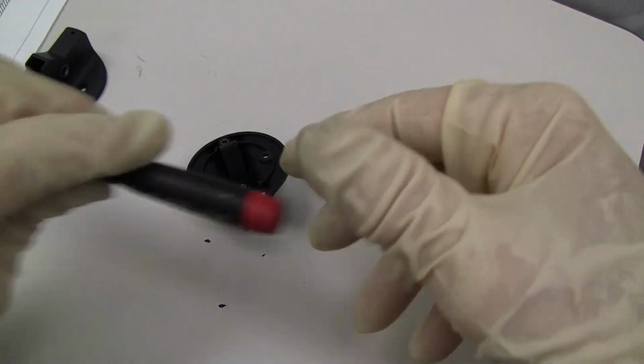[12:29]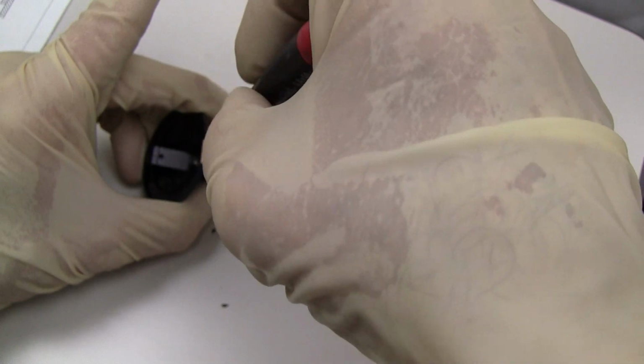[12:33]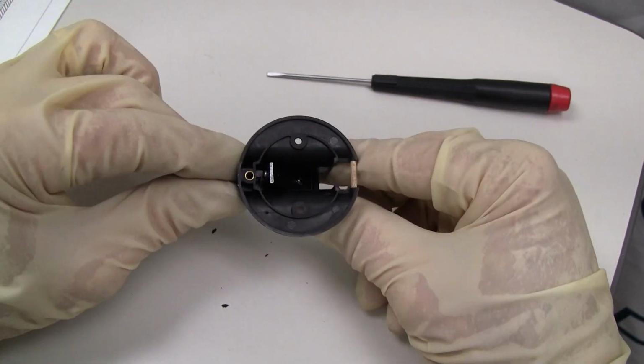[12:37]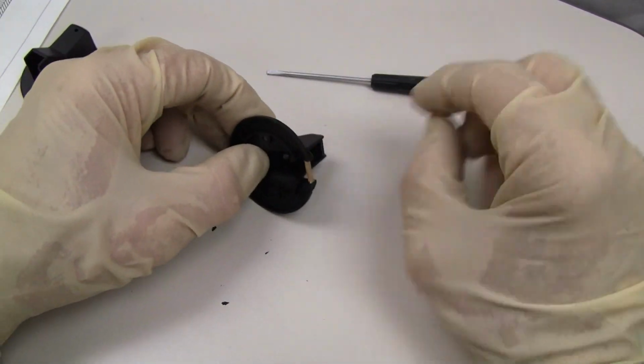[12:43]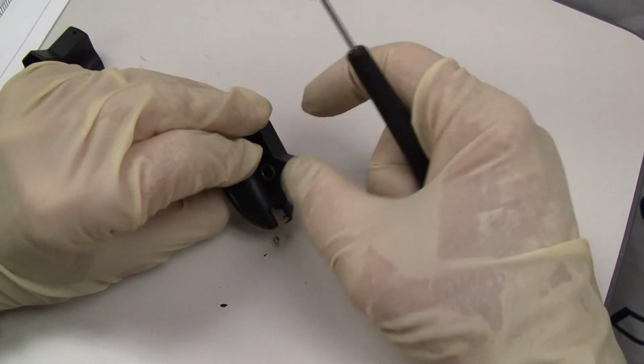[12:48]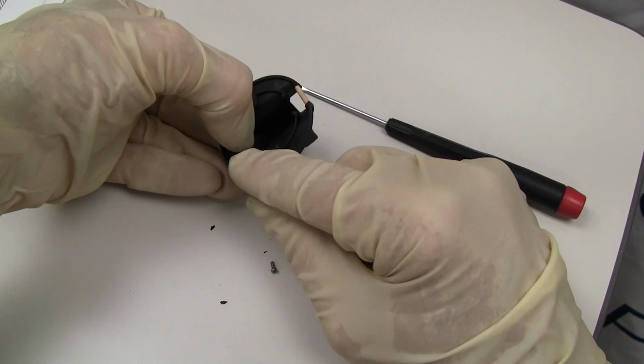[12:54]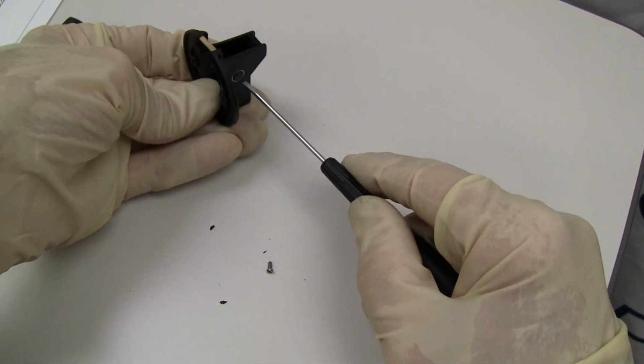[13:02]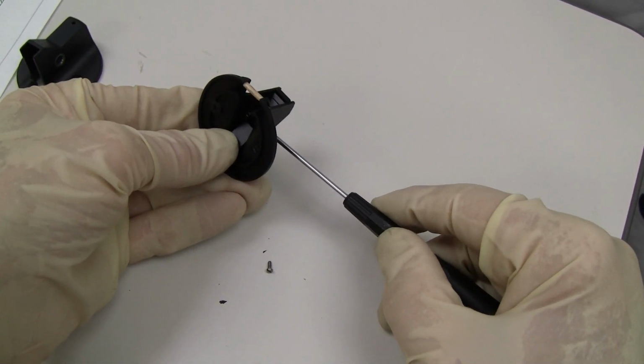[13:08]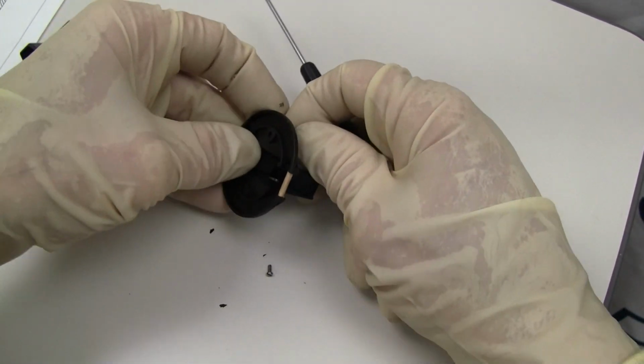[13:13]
Now when I take this off, we're going to lose our spring. It's going to come out of place. Okay, there's our spring. I'm holding it in place so that we don't lose our spring. And now we could even push our little pivoting shaft through, but I'm still holding it down to maintain that spring in the back. But this will come out.
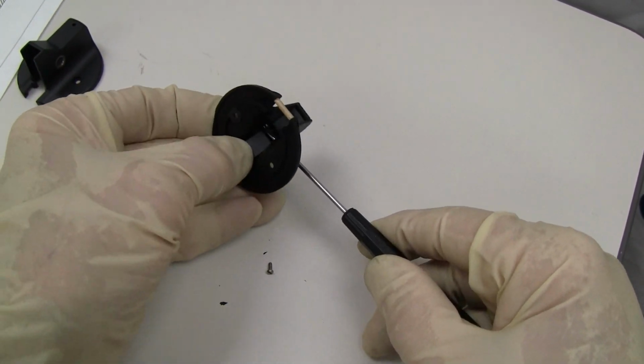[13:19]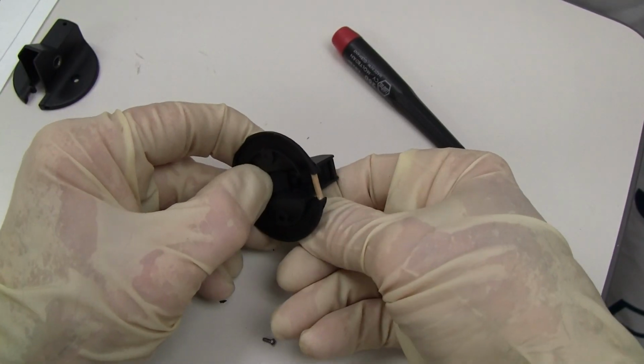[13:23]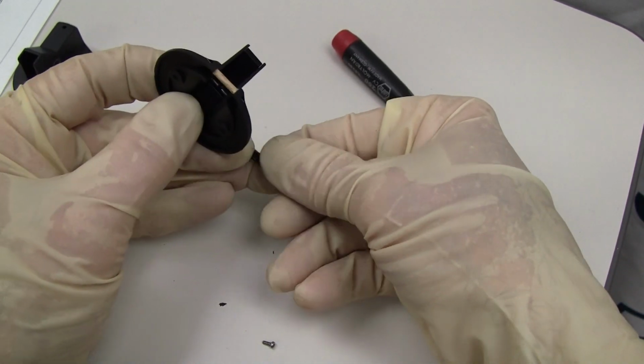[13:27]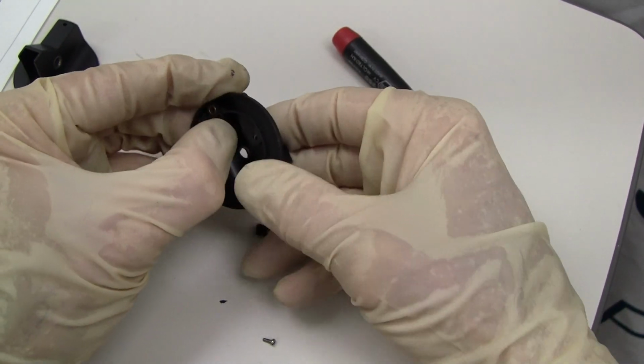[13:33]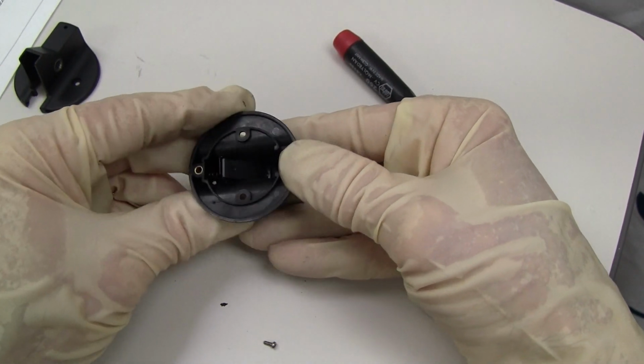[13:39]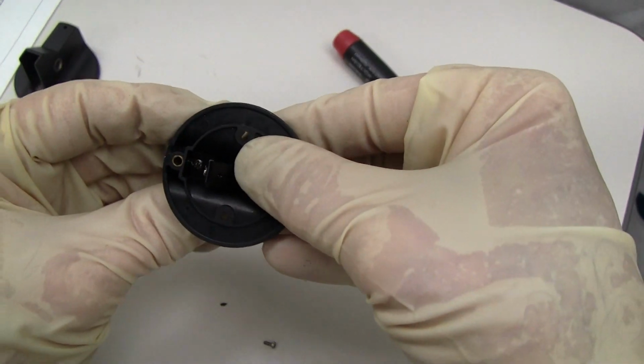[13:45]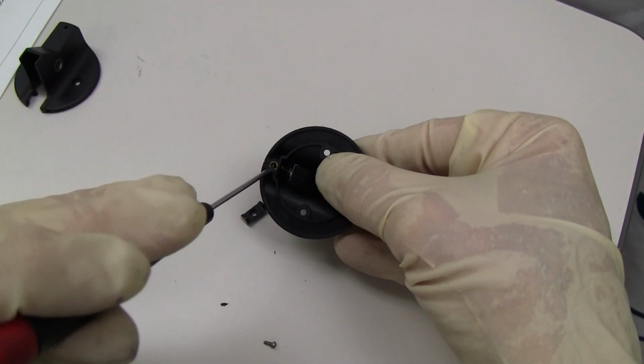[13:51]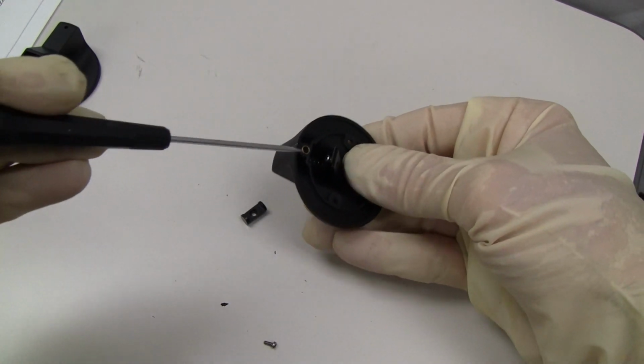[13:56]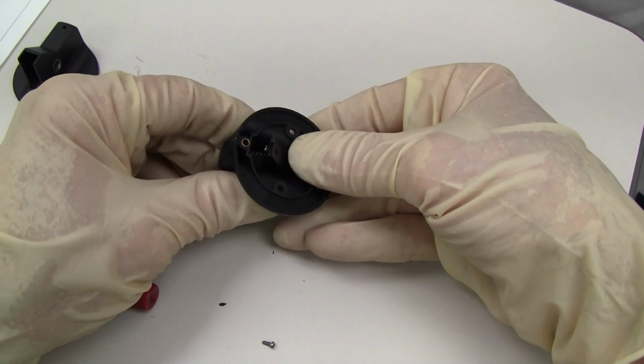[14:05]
Okay. So this is all plastic. I've still got my finger on this plate. Now I'm going to release it. So now you can see behind where that spring is, there's a little tab right there that the spring fits on, and then it goes inside here. So when you're putting it back together, that's how it would go, but we're going to pull this all the way out so you can see it.
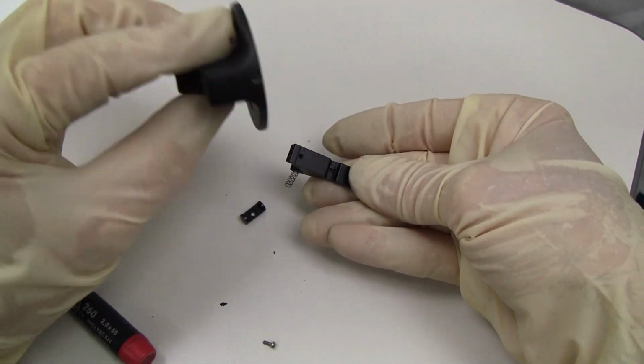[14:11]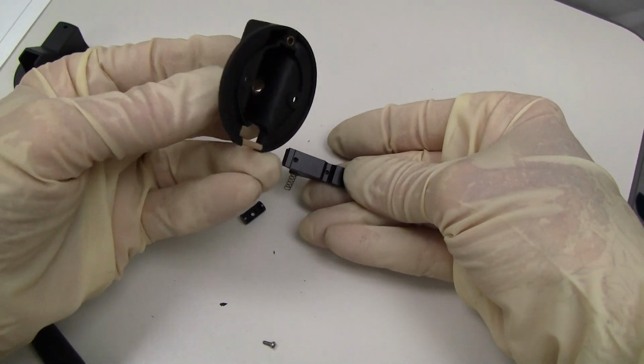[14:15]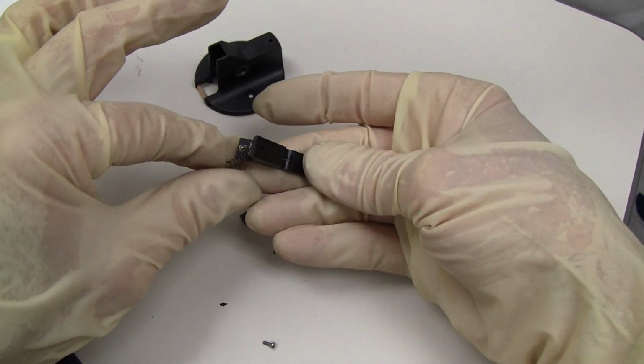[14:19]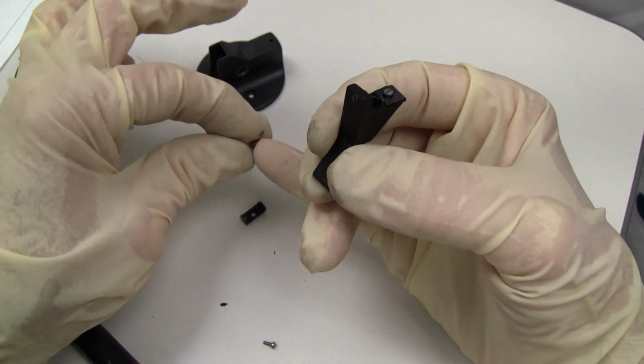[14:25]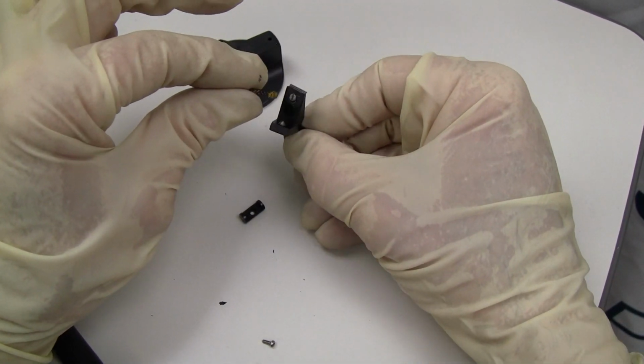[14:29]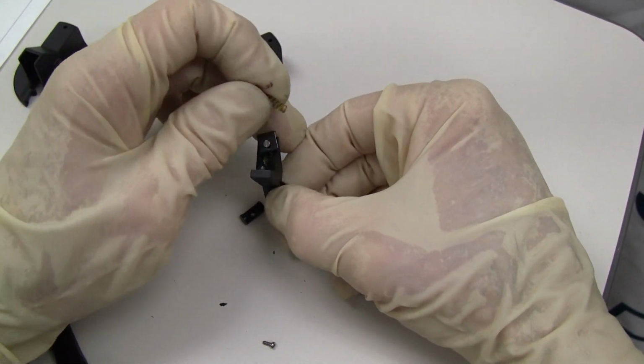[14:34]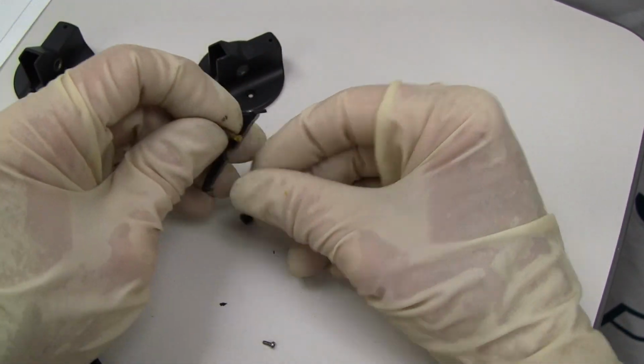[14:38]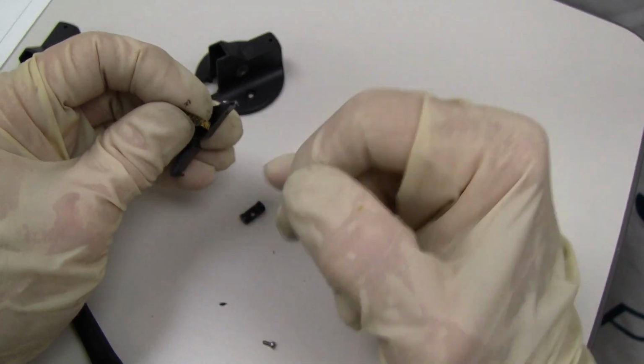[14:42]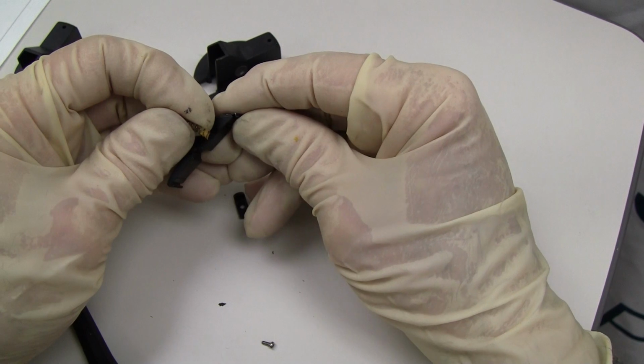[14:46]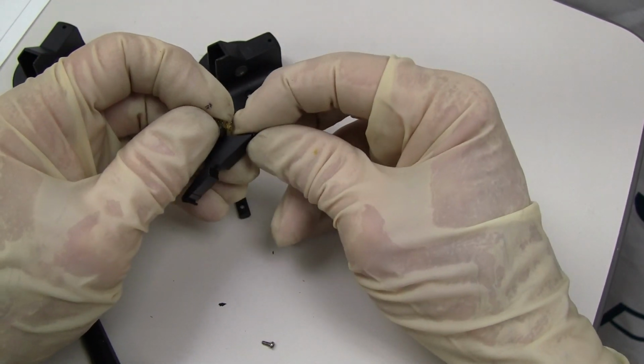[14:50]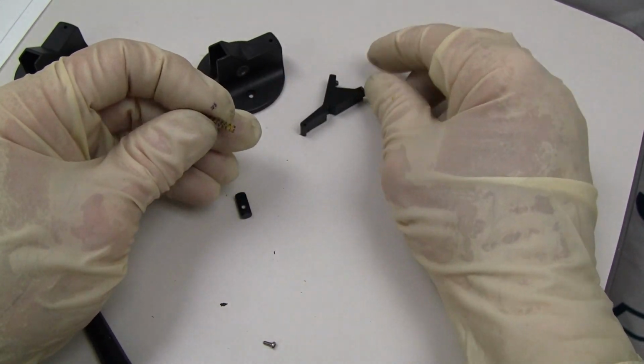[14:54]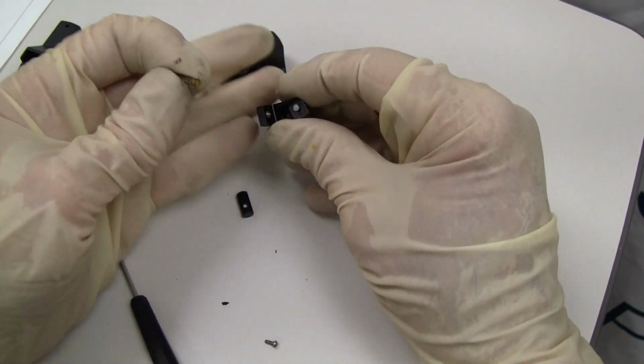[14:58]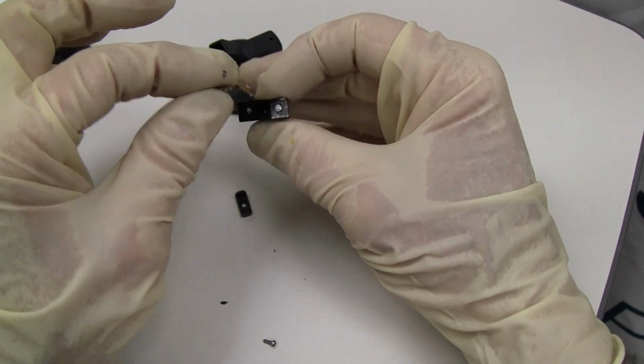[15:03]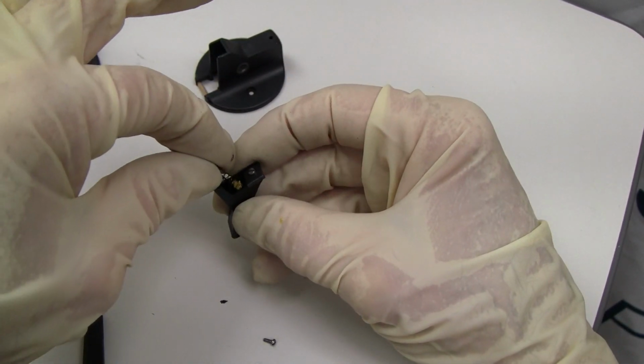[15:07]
So here's just the shell. I'm going to leave this toothpick in here for now. And here's the back of this. And you can see the spring, one end, and the other end is going to slip into here. You can see our adjusting plate to adjust according to the mirror, fitting it in. First, the mirror will fit in here, and then it will slide this plate and tighten it, and that will keep the mirror in place. And so if you're servicing this, this spring is going to go back into this hole.
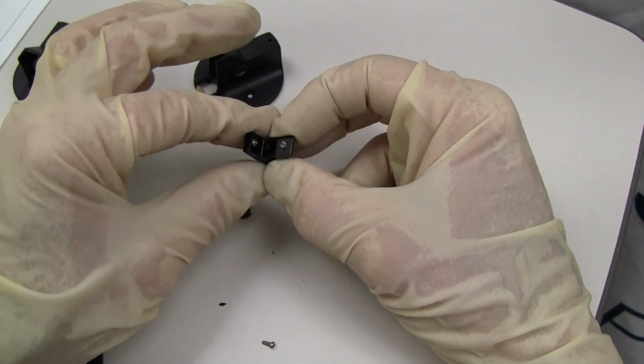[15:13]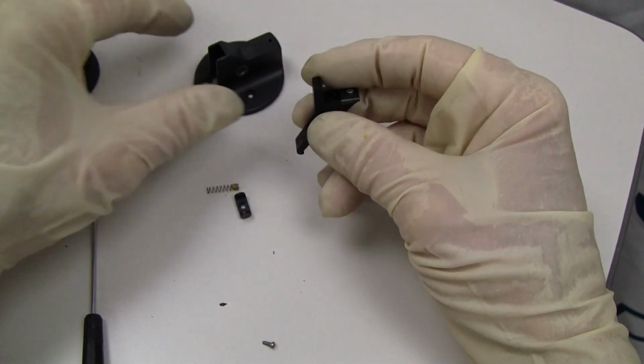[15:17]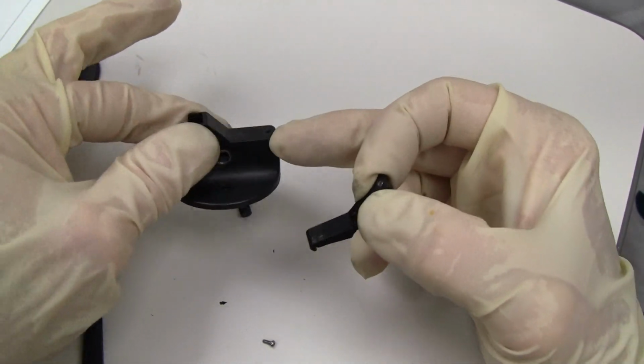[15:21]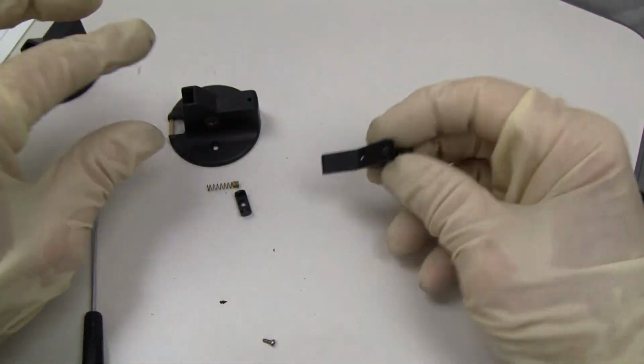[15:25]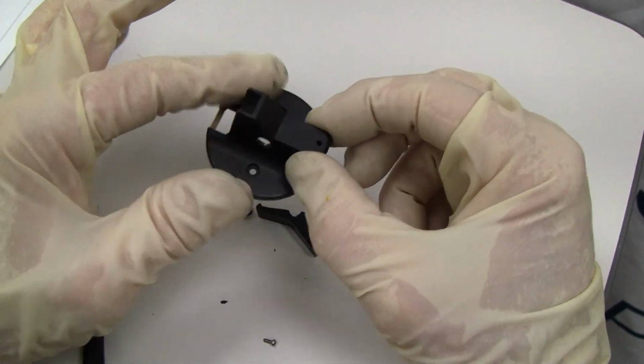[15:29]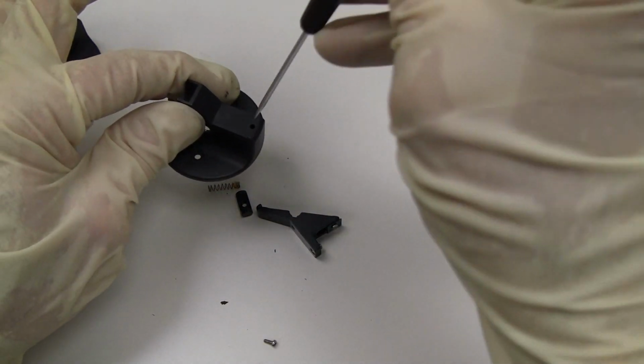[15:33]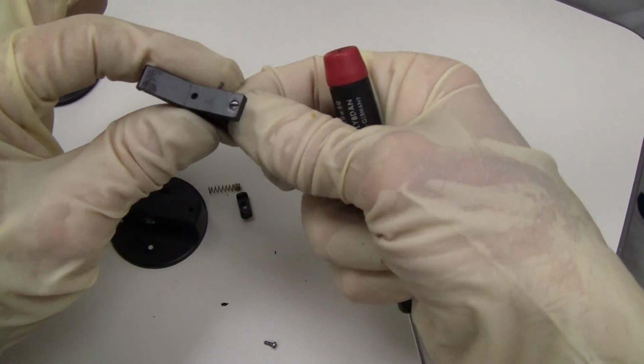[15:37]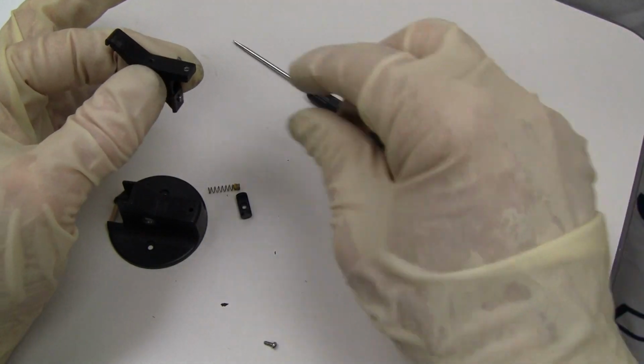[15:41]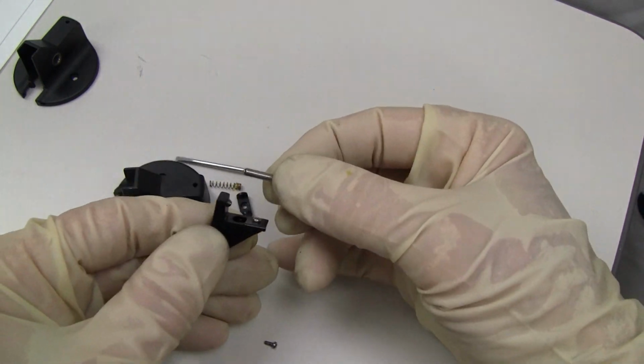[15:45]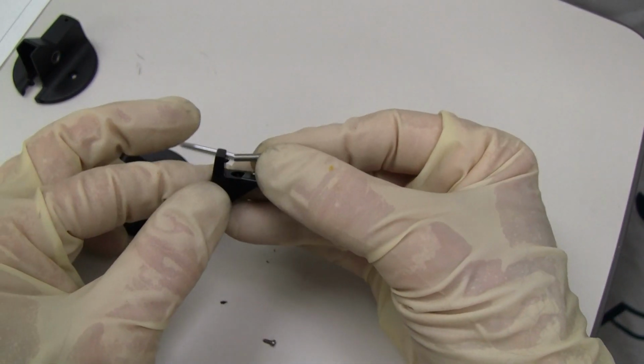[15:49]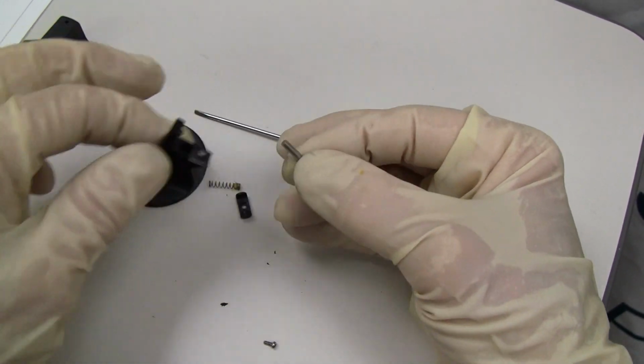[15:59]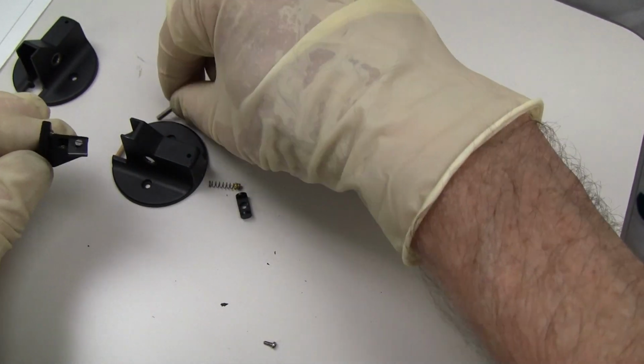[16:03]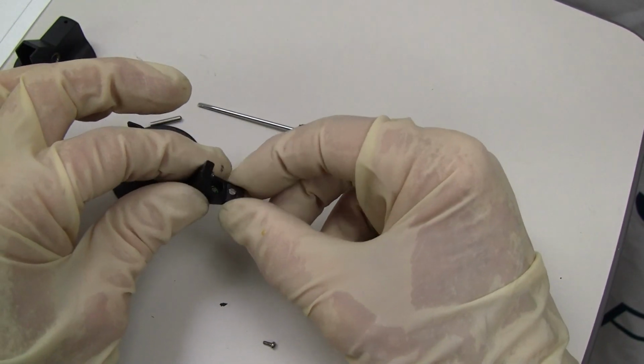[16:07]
Oh, while we're here, I'm going to show you how this, up here, where it adjusts, there's a screw. And when you're adjusting your prism on the outside, wanting to make it go up and down, you'd be turning this screw. And that screw pushes against the pin, the flat part of the pin, and you can adjust the length of your pin to adjust the height of the prism going up and down when you're looking at it through your binoculars.
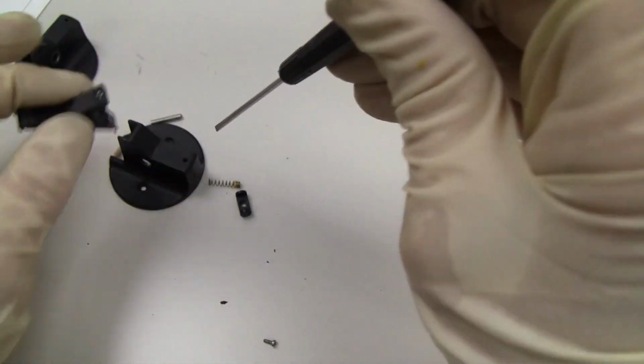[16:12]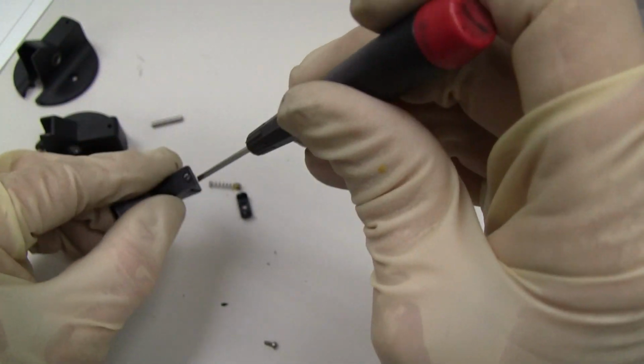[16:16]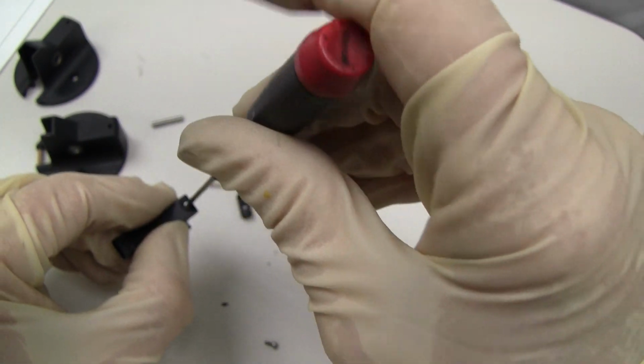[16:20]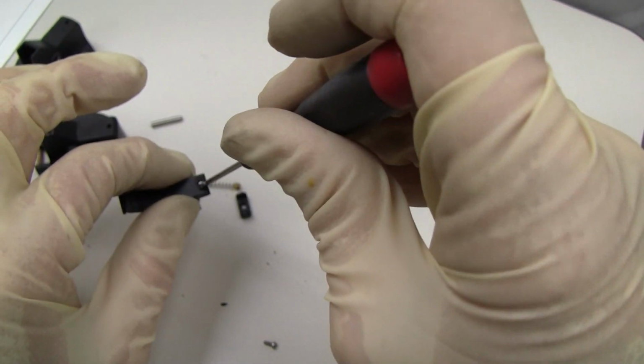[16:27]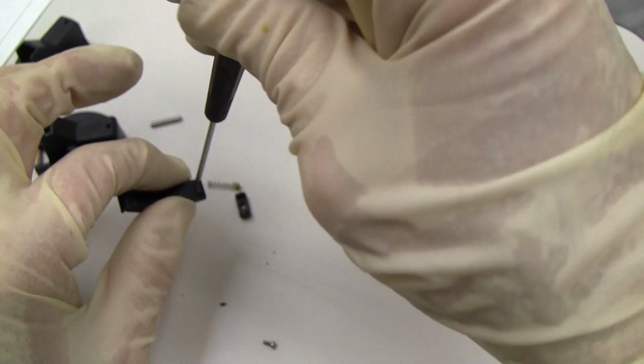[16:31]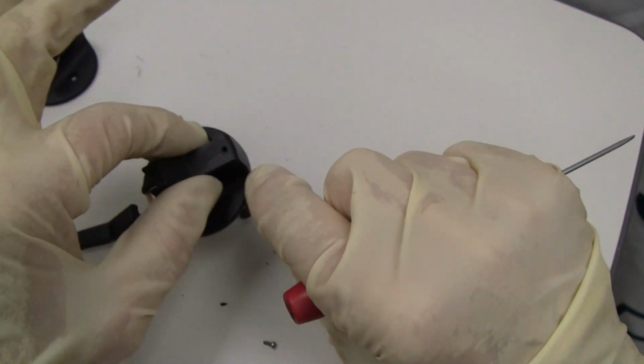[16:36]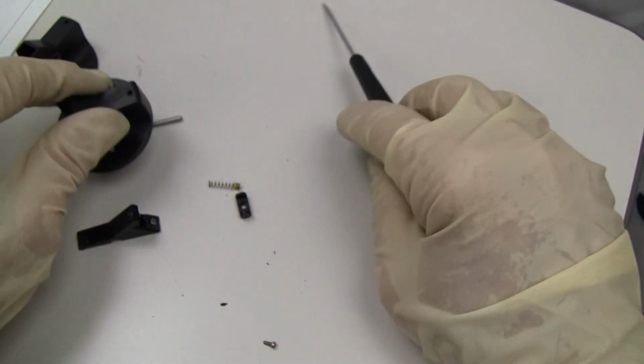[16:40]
So sometimes this little screw, as you're going through here, that screw is very tight. It might have Loctite on it to keep it from turning, and so you're going to have to get some acetone and free that screw up so that you can once again turn it back and forth, so that it is once again adjustable when you stick your screwdriver through there to adjust it.
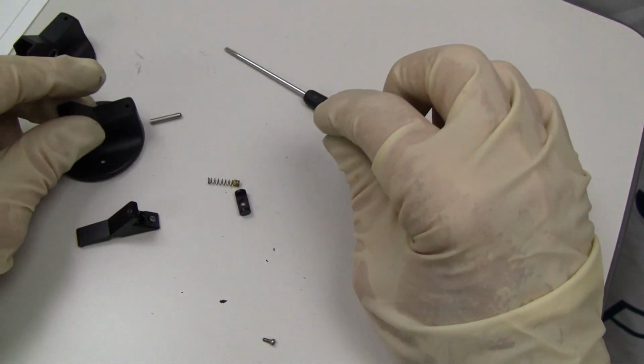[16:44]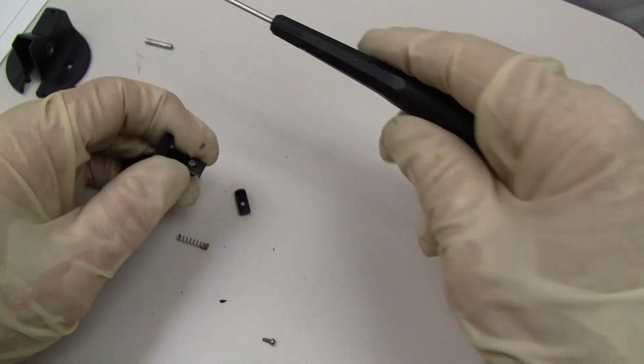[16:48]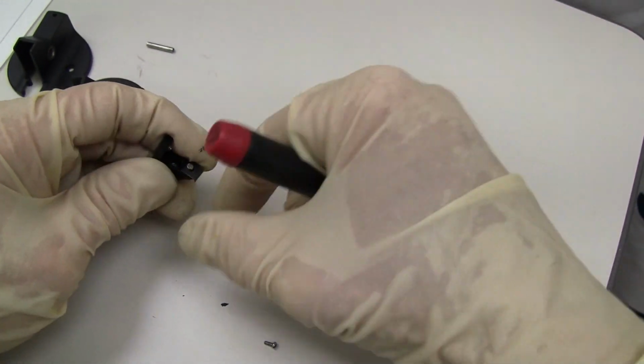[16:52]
So we've broken it all apart. Now to put it back together, I'm going to tighten this up to keep it out of the way and keep it straight.
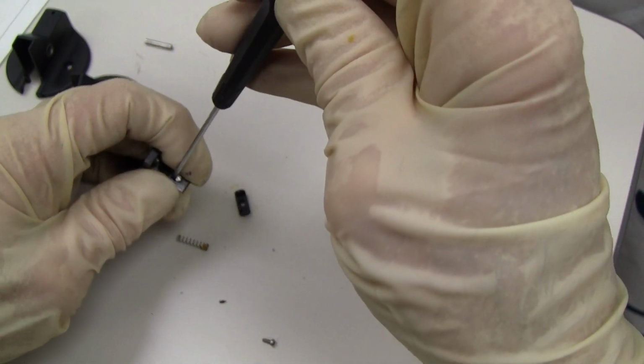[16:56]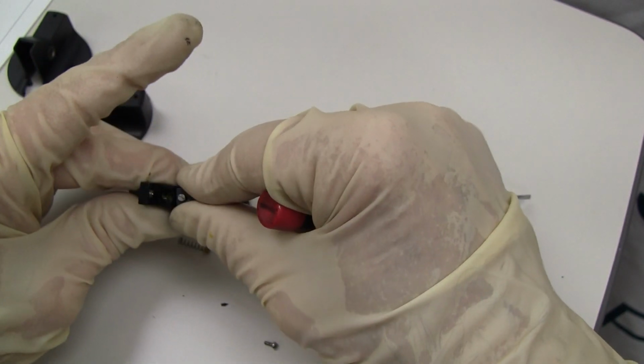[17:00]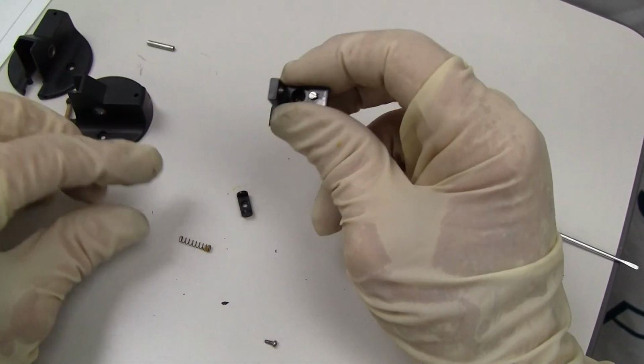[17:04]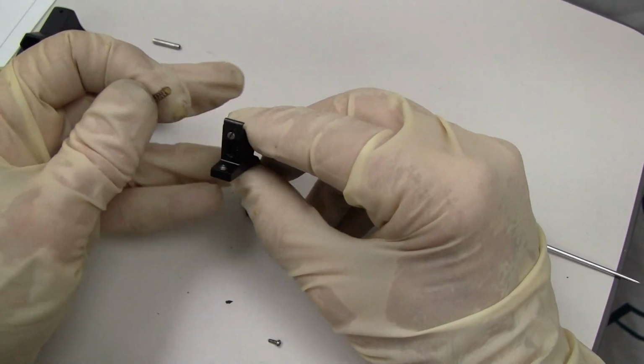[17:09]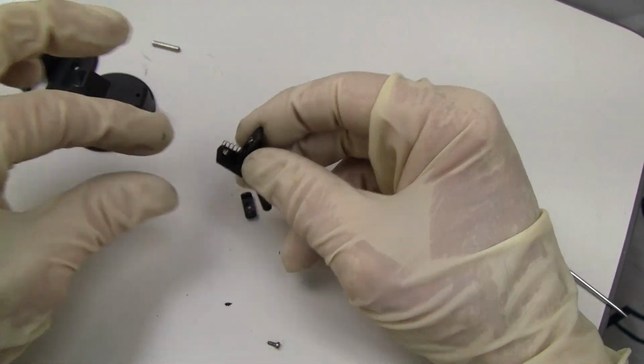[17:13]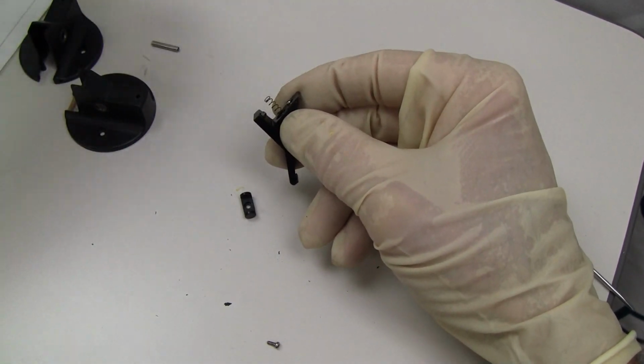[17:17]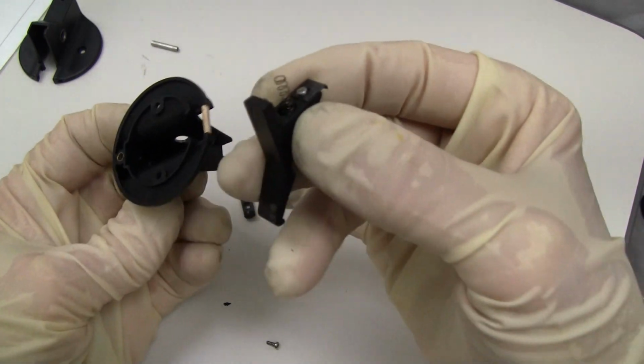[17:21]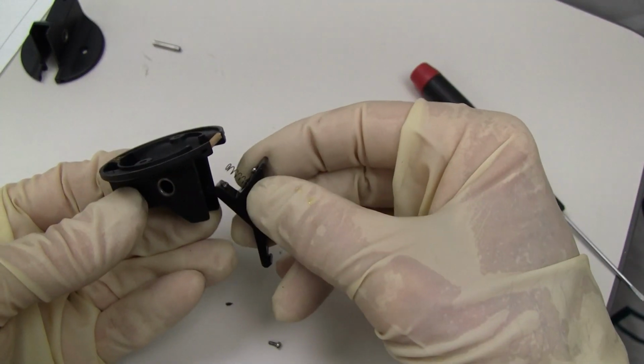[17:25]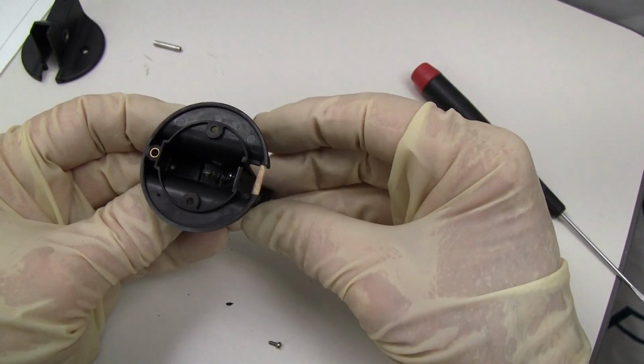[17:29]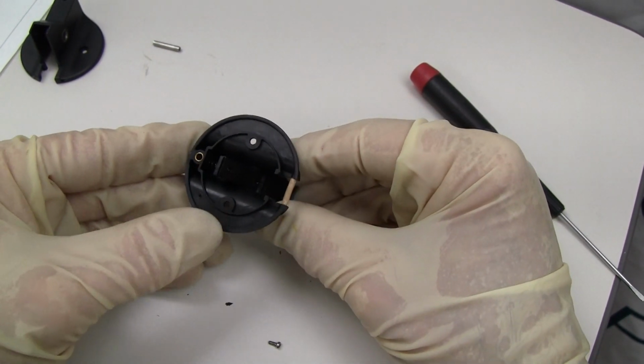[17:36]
It looks like there's a little bit of grease in here. Maybe that's to hold it in place. Okay, we see our little pivot pin in here. We're going to aim to try to get that back right where it was. Like docking the space station. Okay, we've got it in place.
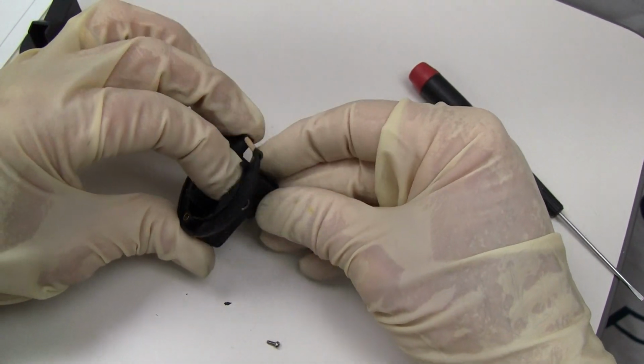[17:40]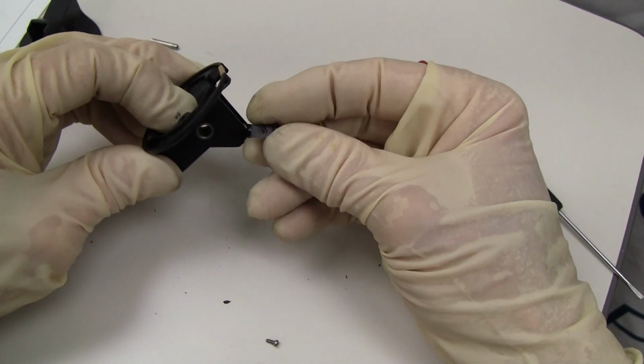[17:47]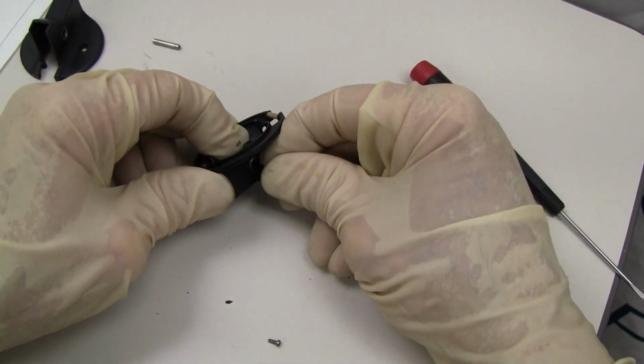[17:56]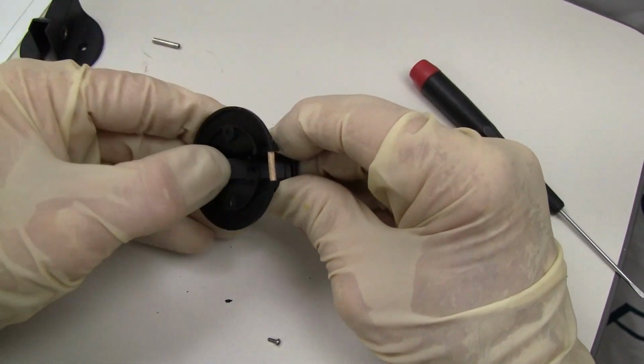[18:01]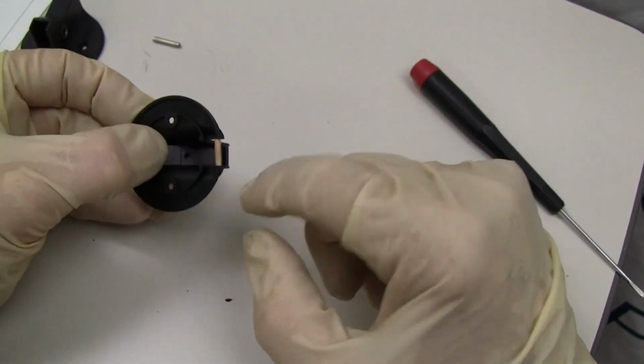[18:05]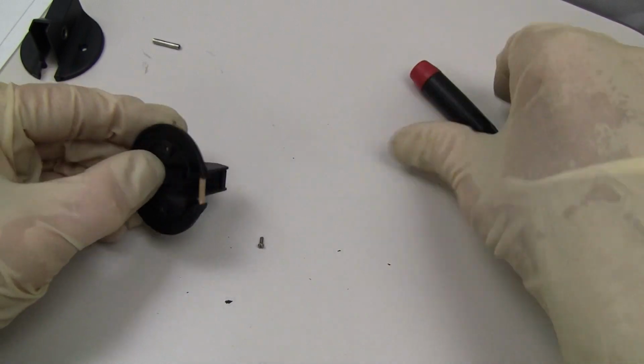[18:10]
Now we're going to put pressure down on it so that now we can install our shaft, pivoting shaft. Okay, went in easier than it went out. Installed it here so it's flat. Now we can install our screw.
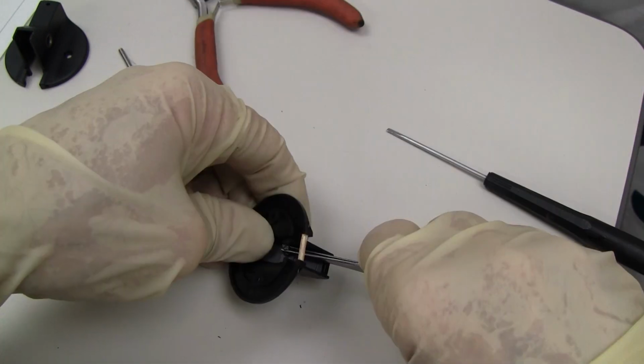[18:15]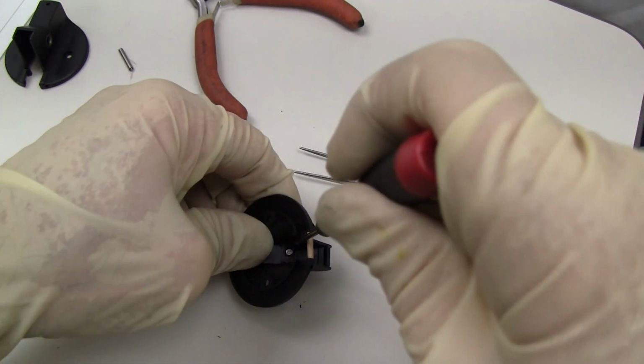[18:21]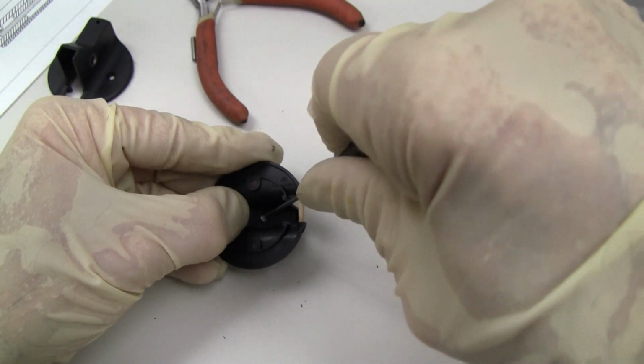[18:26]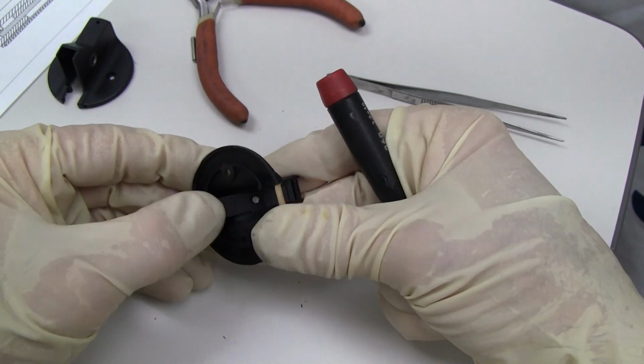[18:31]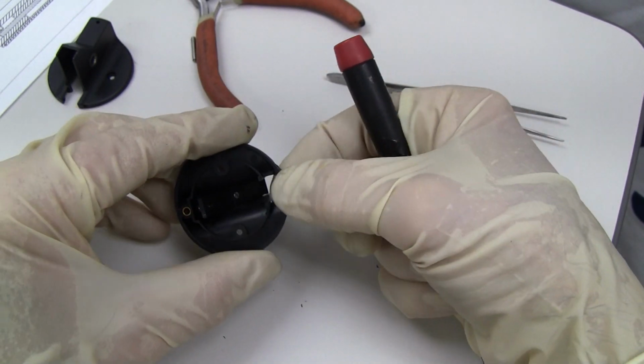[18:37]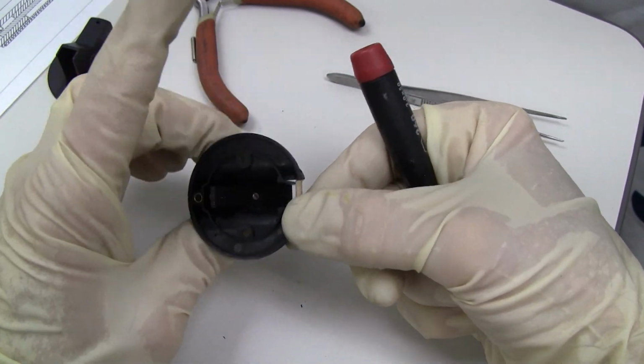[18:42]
I've got some tweezers. Okay, that's back into place. It's moving freely. You should be checking it while you're putting it together. If this wasn't in here, or the diffuser was gone, it would probably be binding up against this movement.
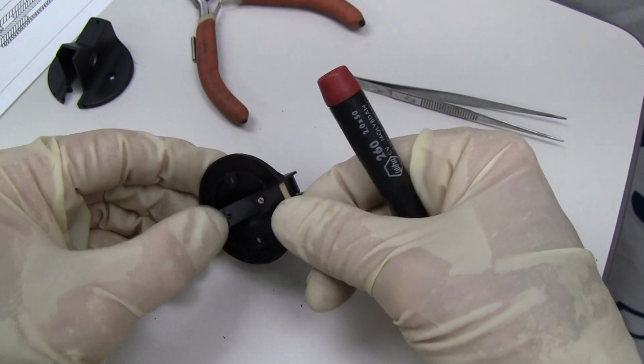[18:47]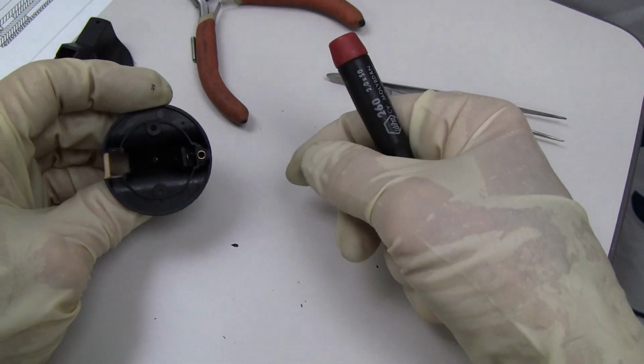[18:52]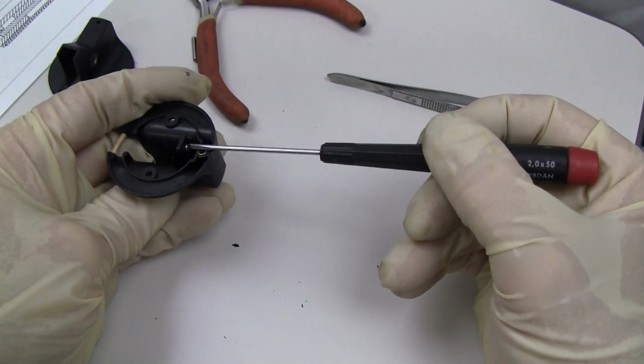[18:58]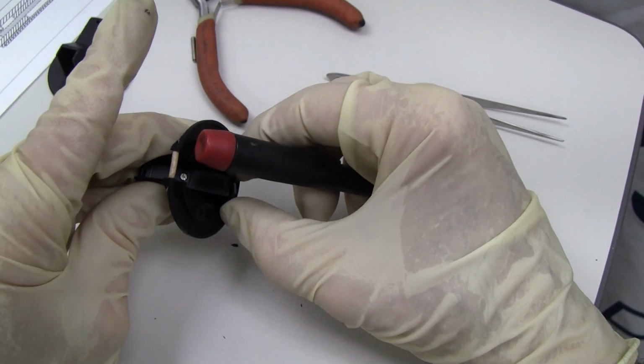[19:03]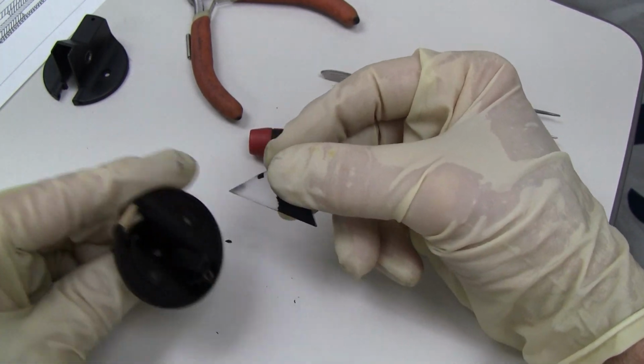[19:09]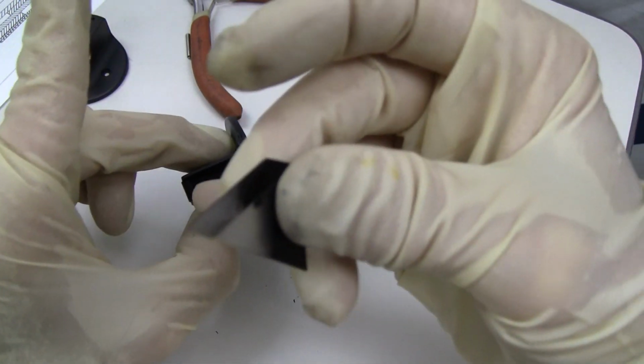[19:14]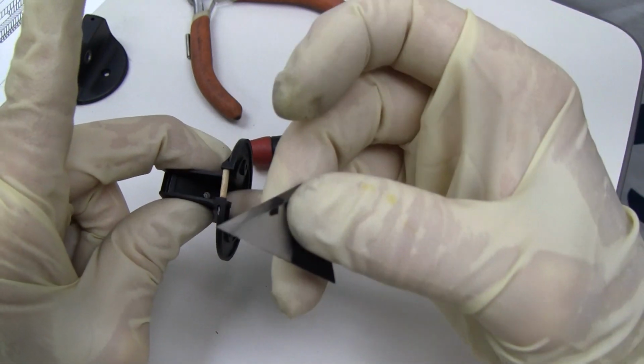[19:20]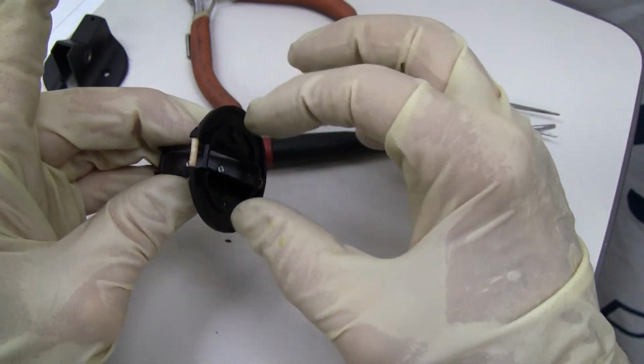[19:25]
We've got that in. Now we can put our prism back in. I'm going to loosen the back of this since I tightened it earlier to keep it out of the way. Shift it out, and remember the long edge goes down into there, and it's going to lock into the front, and then we're going to lock this plate behind it. Once it grabs that edge,
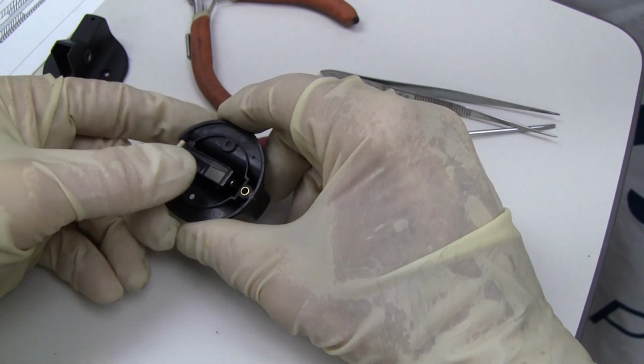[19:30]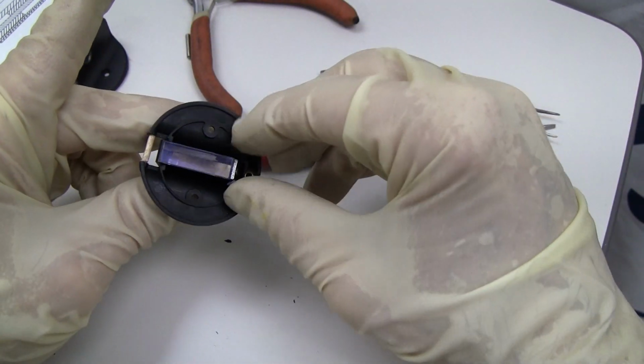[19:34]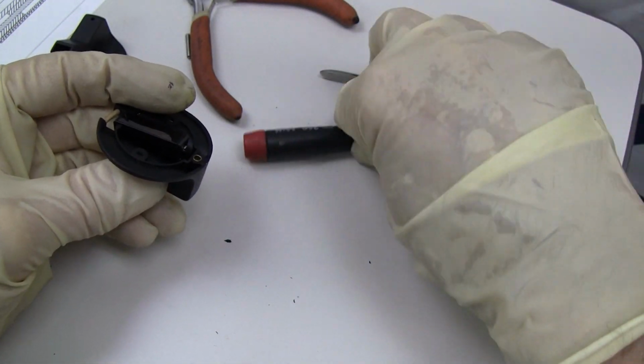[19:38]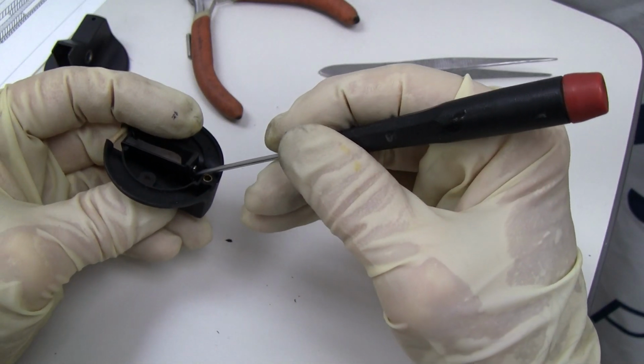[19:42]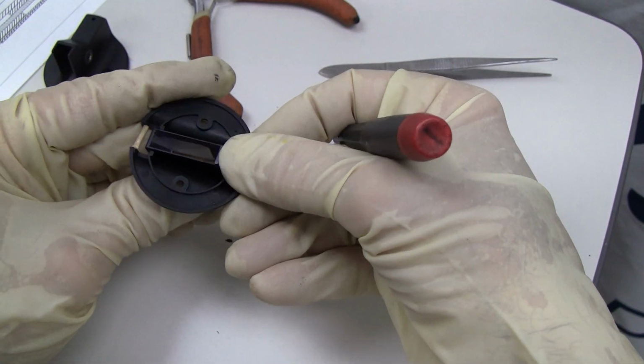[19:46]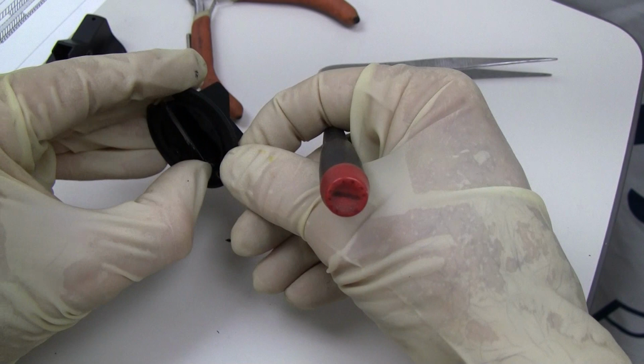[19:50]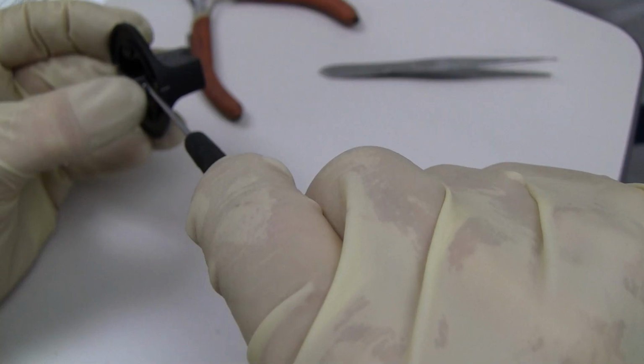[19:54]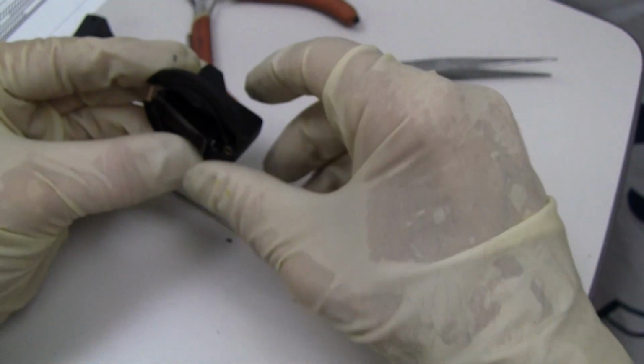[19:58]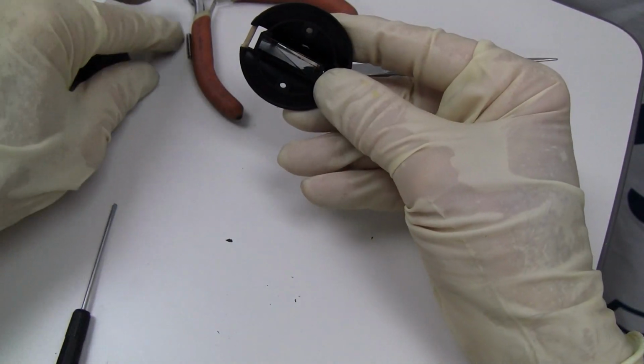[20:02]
make sure you've cleaned your prism first. And now we can fit this edge of the plate on top. There it is. Putting it on, making it firm, and then tightening the screw. Still moving freely. That's a good sign.
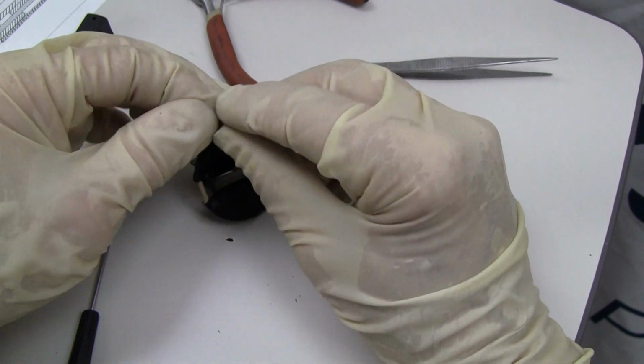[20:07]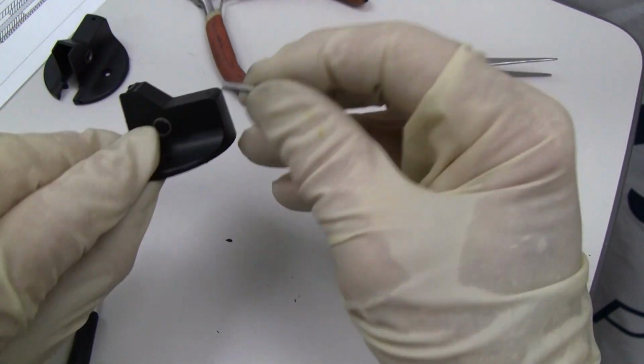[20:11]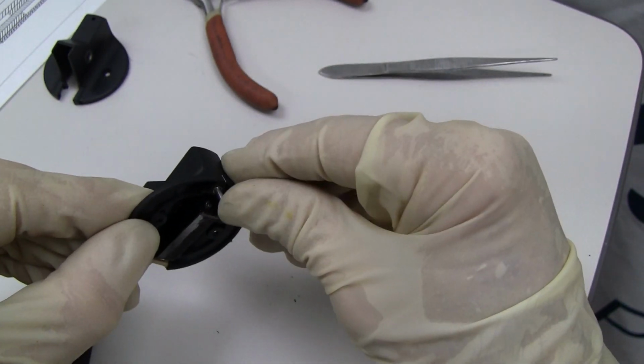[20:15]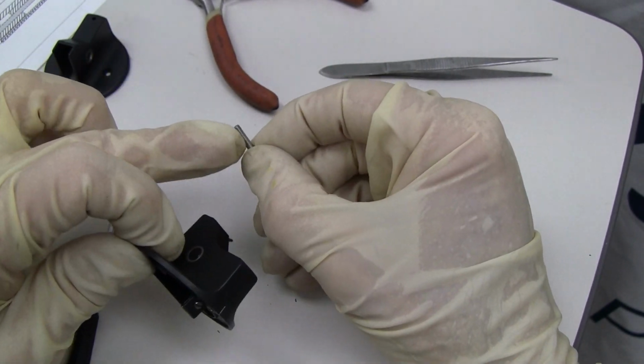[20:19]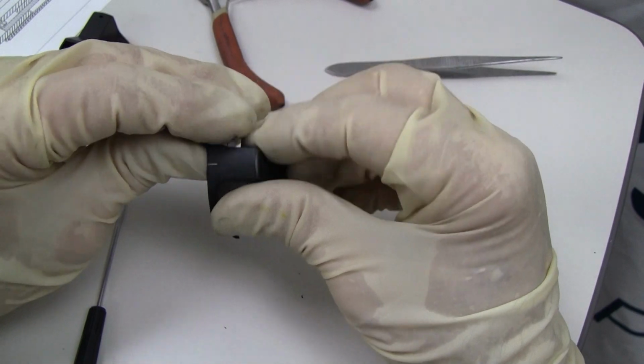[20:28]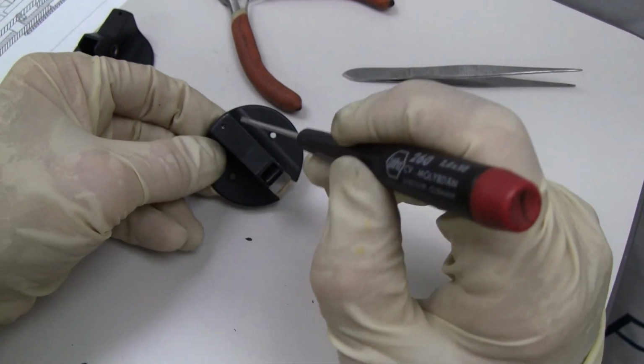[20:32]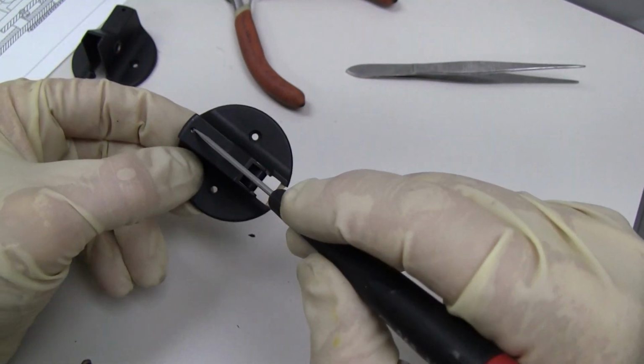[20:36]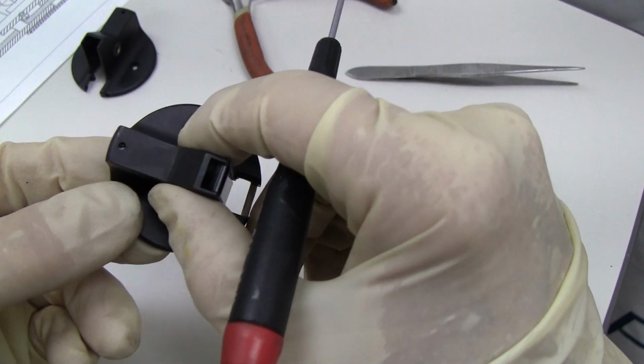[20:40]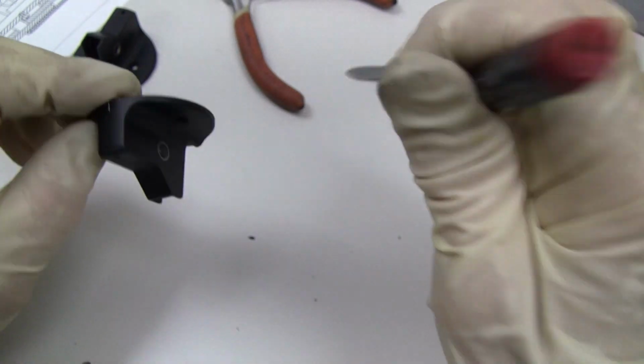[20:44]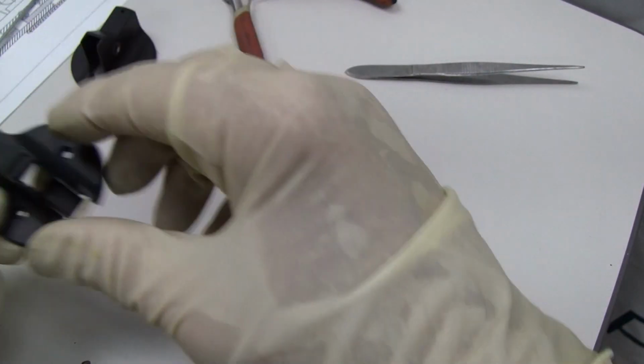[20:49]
Put our pin back in. Flat side goes towards the screw. Make sure it's still moving. You might want to put a little bit of lube in here in case it was stiff. And we've already verified that we could move our screw in here. We could turn it one way or the other. And that's access to that screw. You can see it disappear as it goes down. So that is determining the length to know how much to move it up.
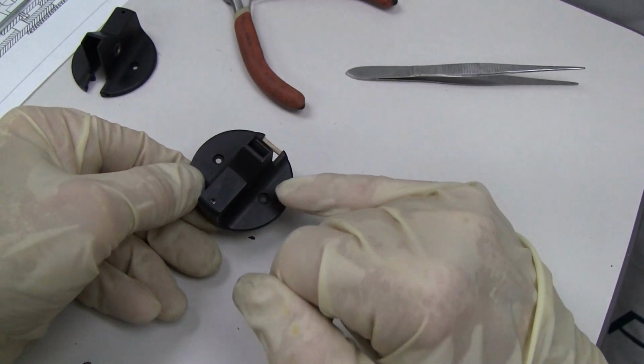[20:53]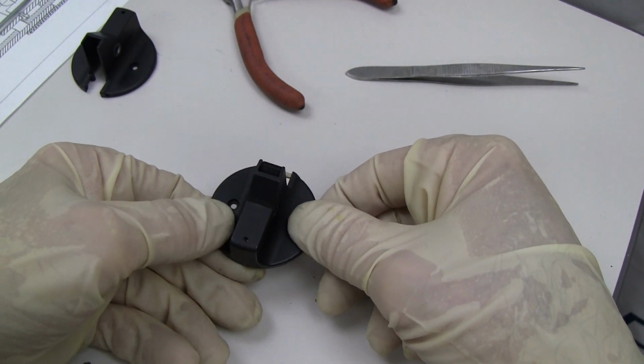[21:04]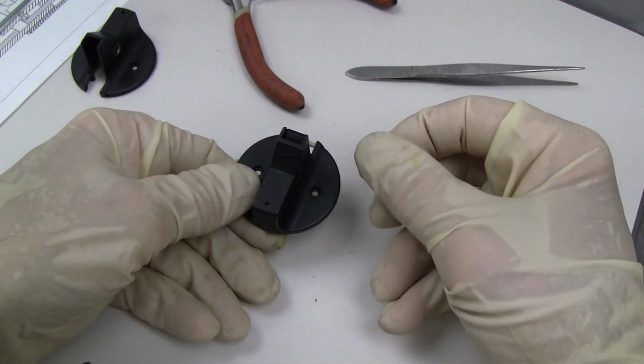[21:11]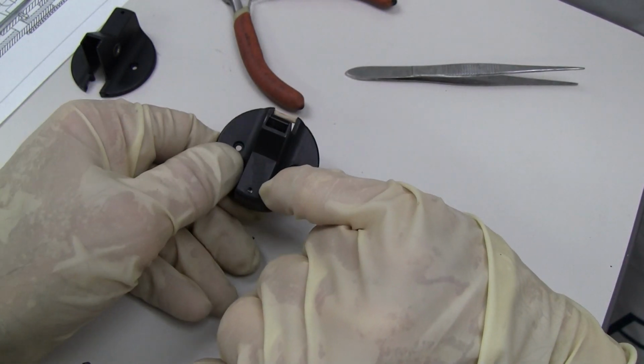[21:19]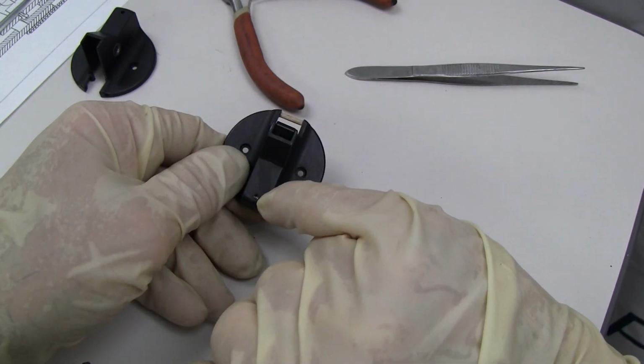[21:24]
And then we'll install it back on our slit lamp with the two screws. And then before you completely tighten, you're going to have to turn and adjust the light because there's movement in here. And once you have it centered, hopefully you had it centered before you even started. But you could center it there, and then if the light needed to go up and down, you could adjust your light up and down with this set screw in the back.
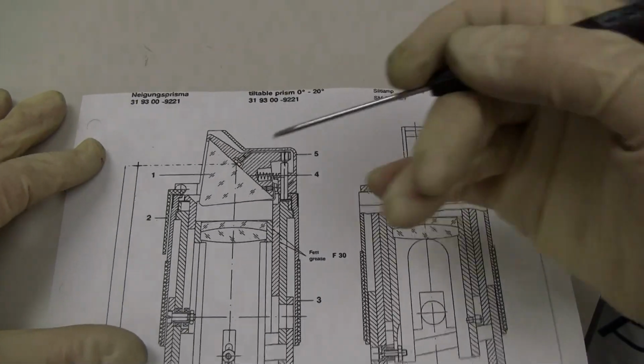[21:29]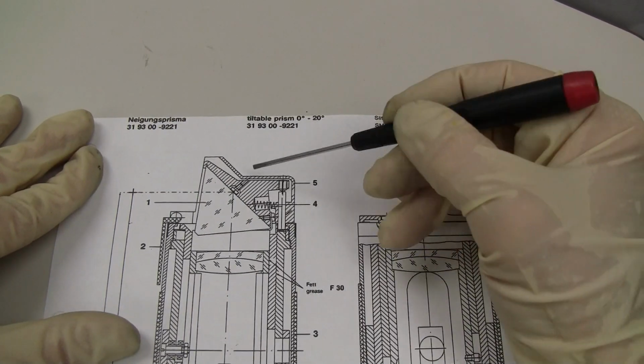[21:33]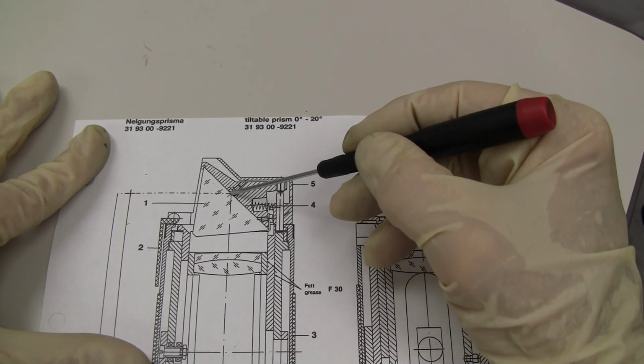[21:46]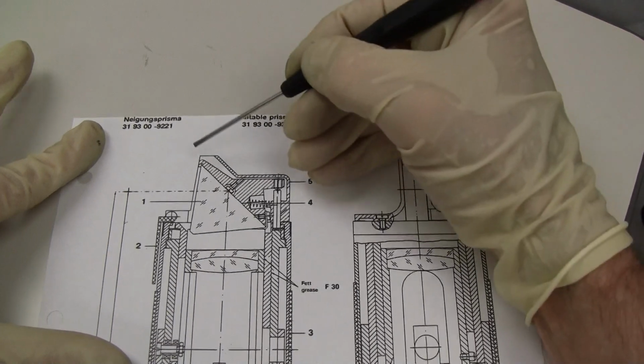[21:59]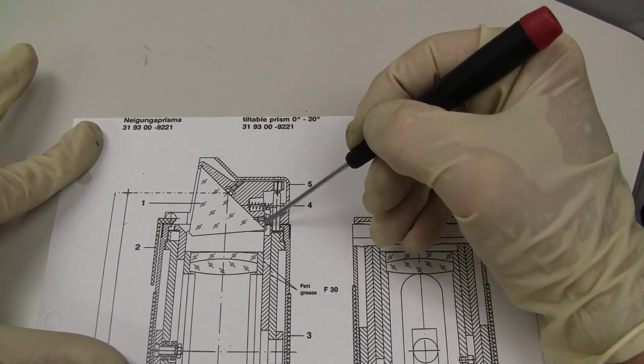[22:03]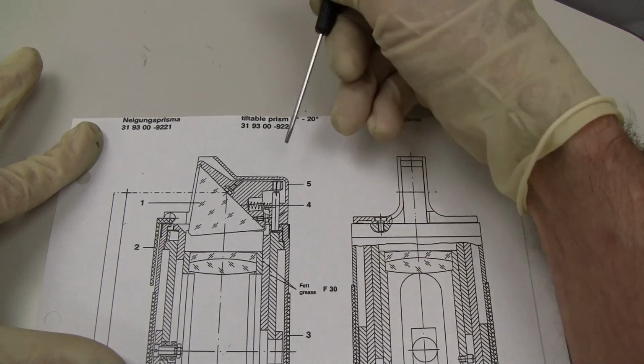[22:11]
So this is a little diagram of the tiltable prism, and once again we see our spring in the back, and we see our screw here holding it into our round pivoting shaft, and we see the prism here being held by this lip and this movable plate that this screw tightens once it's adjusted. And here's our pin, and here's our adjusting screw here.
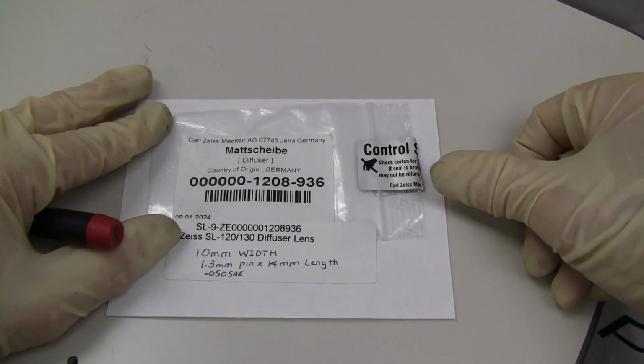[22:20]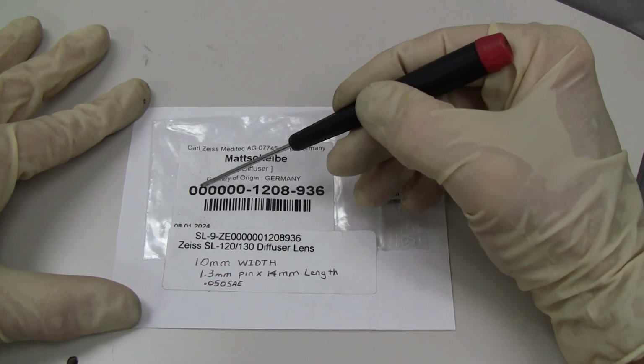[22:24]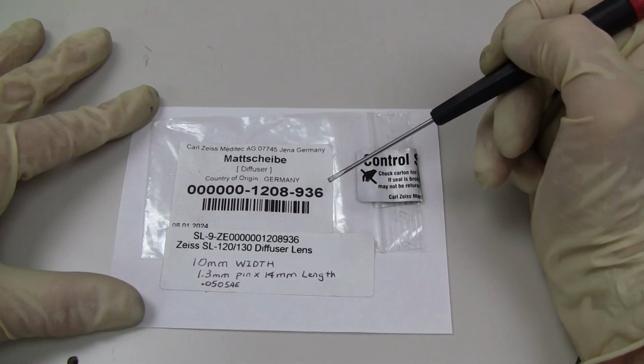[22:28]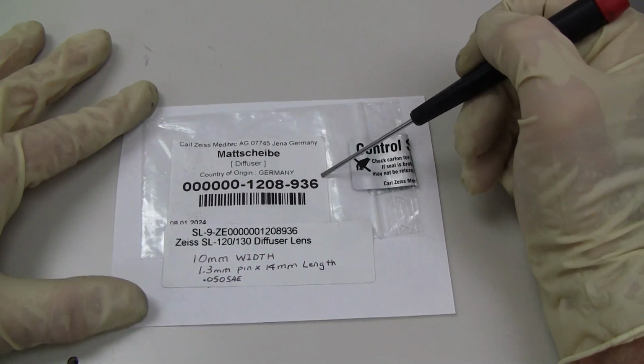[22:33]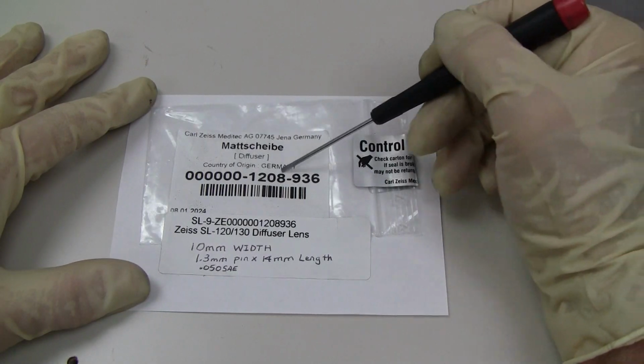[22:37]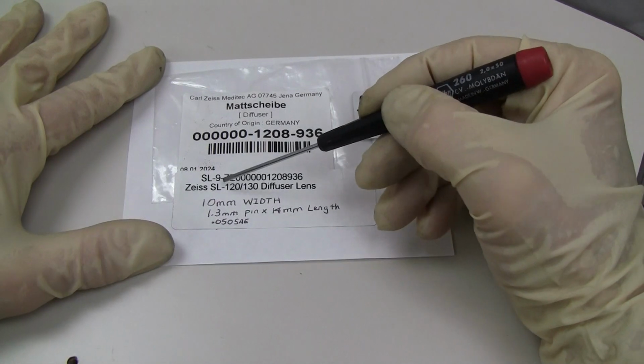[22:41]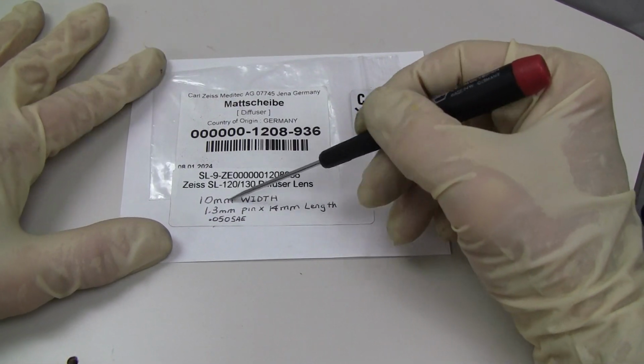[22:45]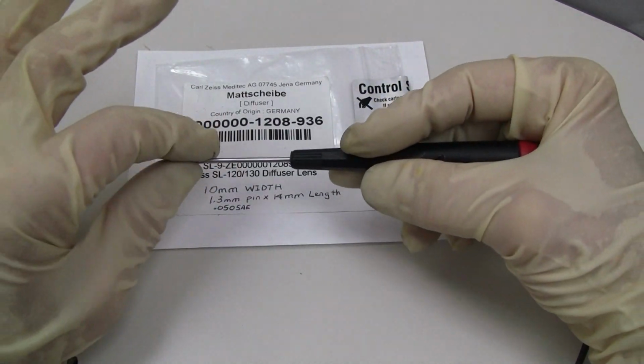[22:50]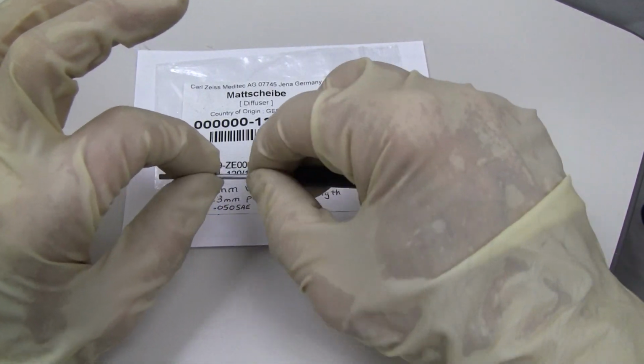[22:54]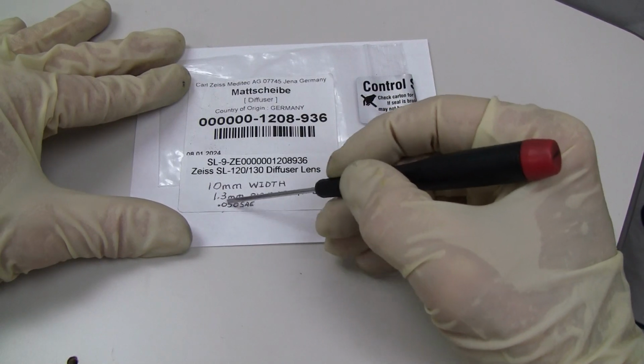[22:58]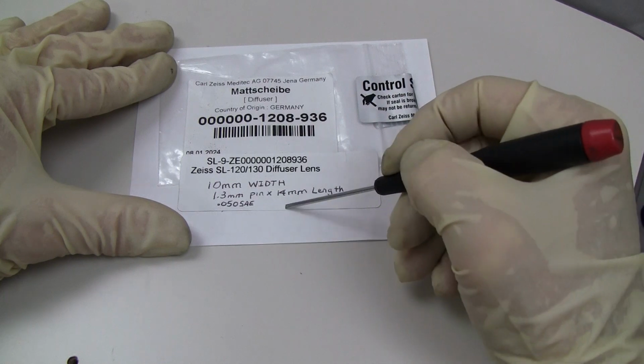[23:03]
And if you needed the number of the diffuser, this is the number, the Zeiss number, and you may be able to get it from a distributor near you, or you may have to go get it from Germany. And once again, the width, if you're putting just a temporary thing to hold it up wide, it's 10 millimeters. You can use just a little toothpick or something to hold it wide. But if you need the pin, it's going to be something around 1.3 millimeter by 14 millimeters, or 0.050.
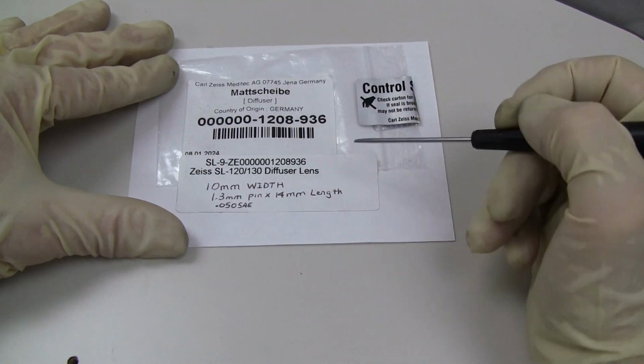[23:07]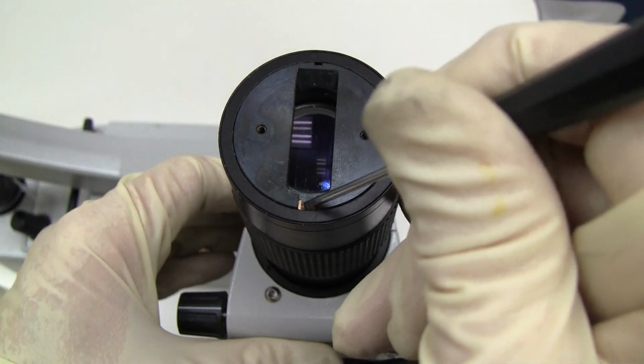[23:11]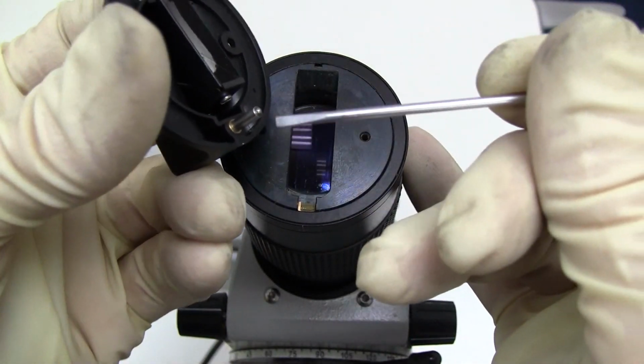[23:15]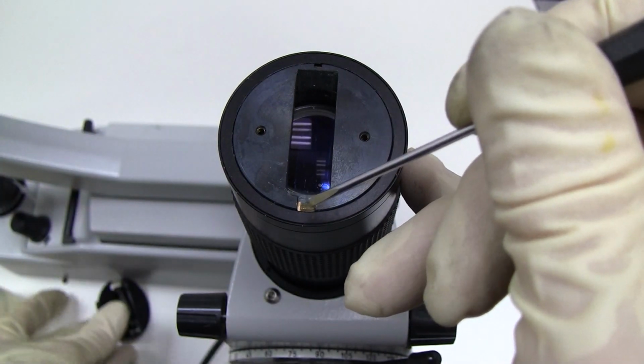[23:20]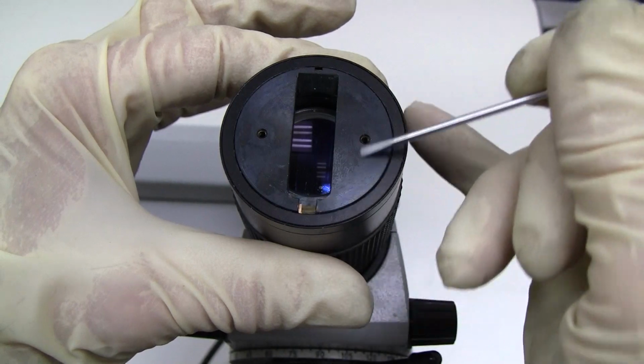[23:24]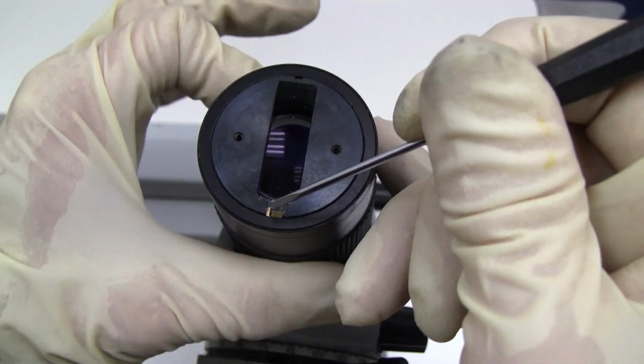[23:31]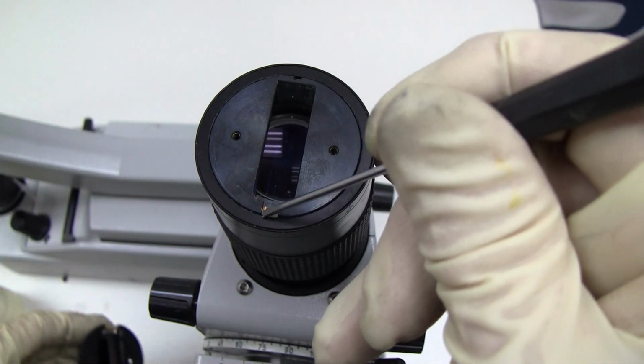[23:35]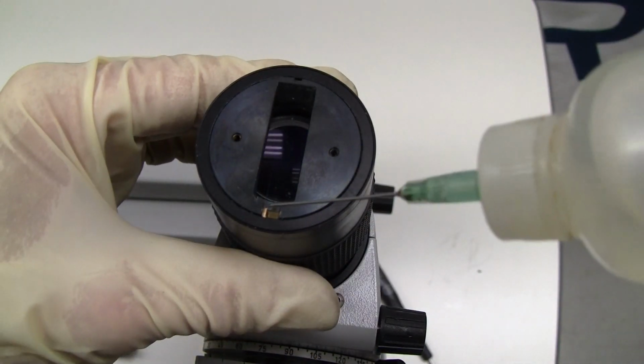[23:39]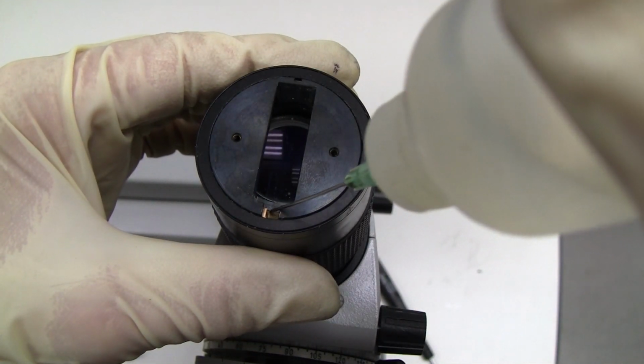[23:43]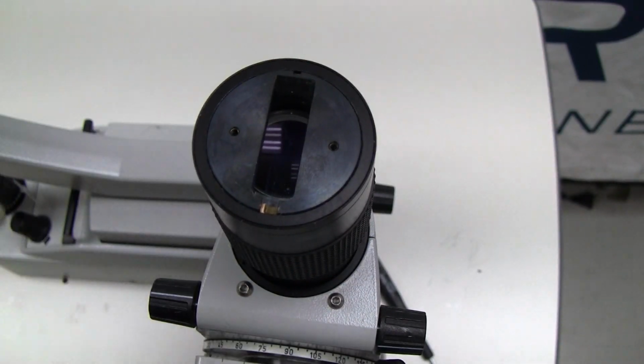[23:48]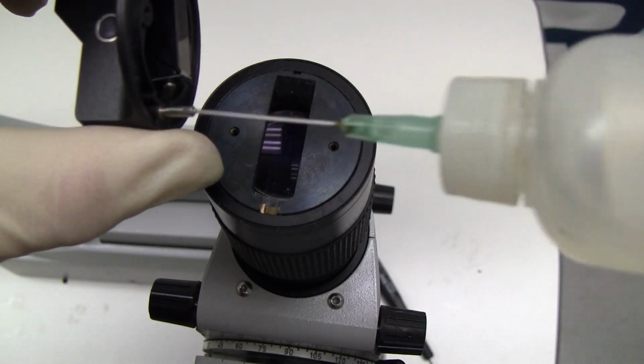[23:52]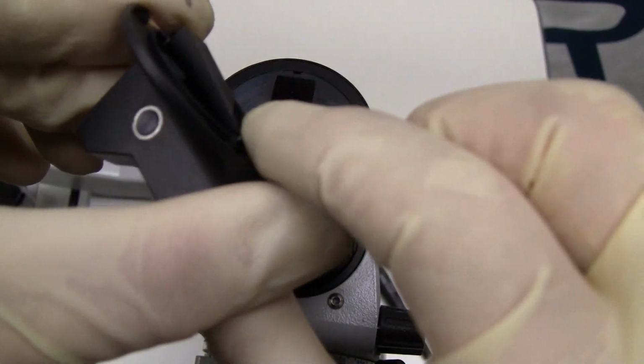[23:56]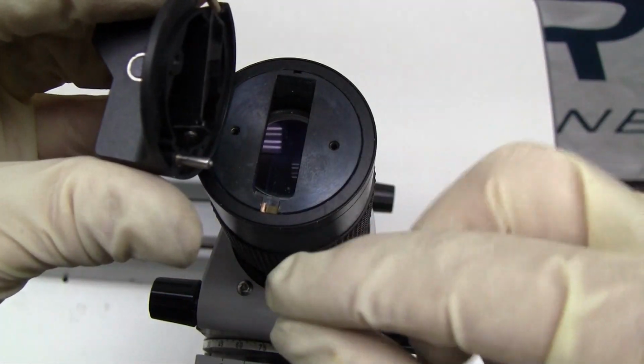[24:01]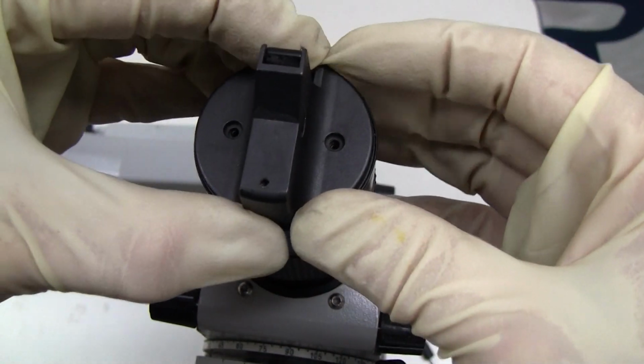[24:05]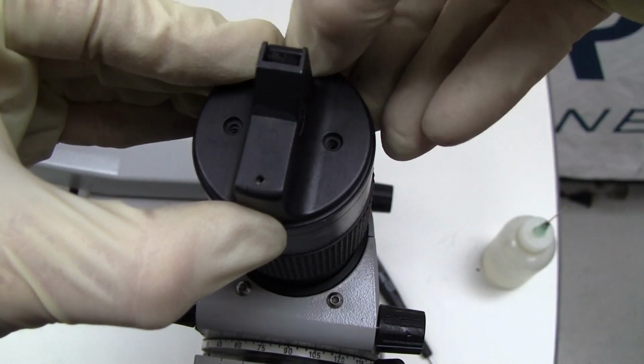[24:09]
You can see the spot where the pin rests on down here. It's made of brass, and as it turns, there's a brass rim around here, underneath here. You can see it moving. So that's the bottom of this pin is resting on that, and you might want to put a drop of rim oil on that little brass rim. And if you have your oil, put a little drop on the pin to make sure that it's moving freely, and then install it right on top of that brass rim, and then install your screws.
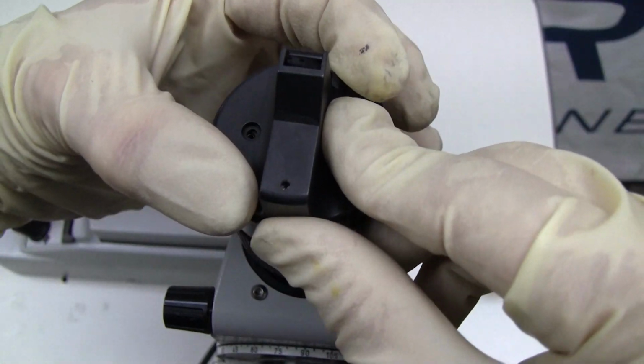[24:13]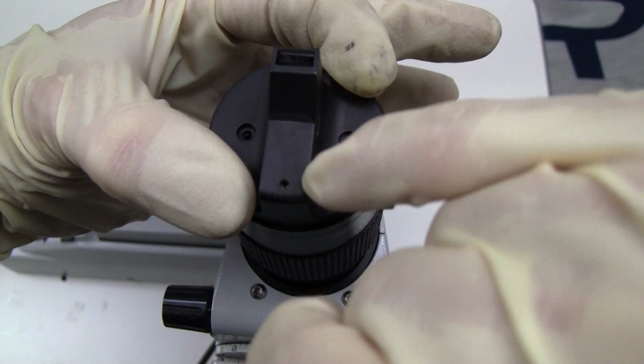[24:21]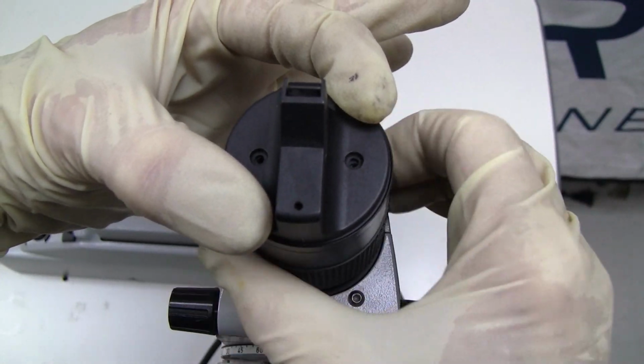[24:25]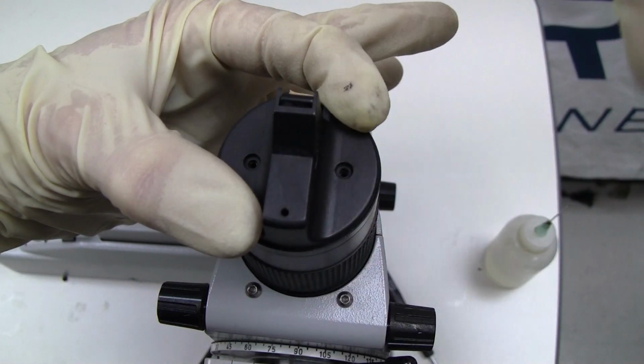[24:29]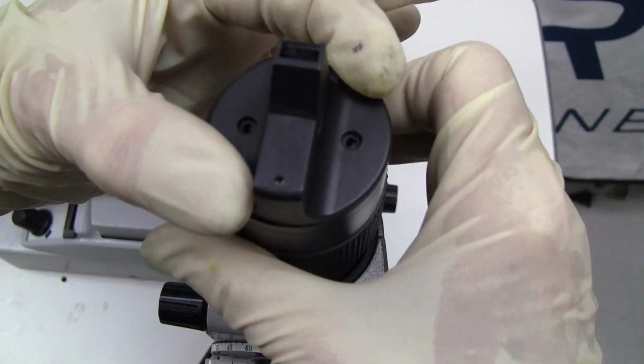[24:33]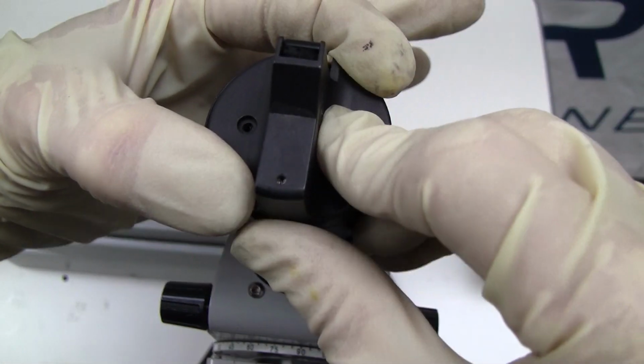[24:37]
Install your two screws, check your alignment with shining the light through it, left and right, up and down, the adjustment screw. When you're moving your prism up and down, the light should be staying the same height in your view. That's when you know everything is working fine.